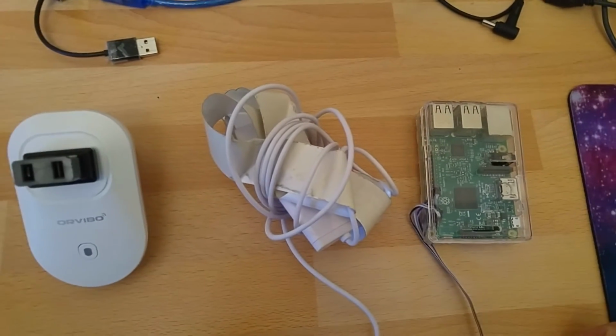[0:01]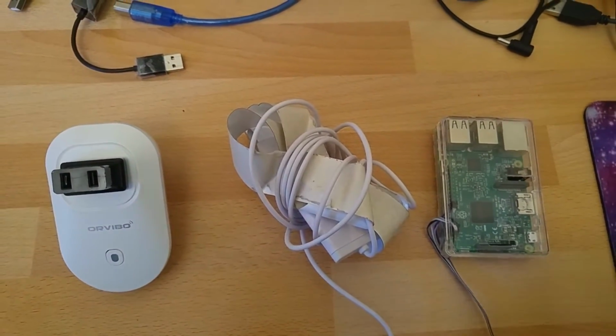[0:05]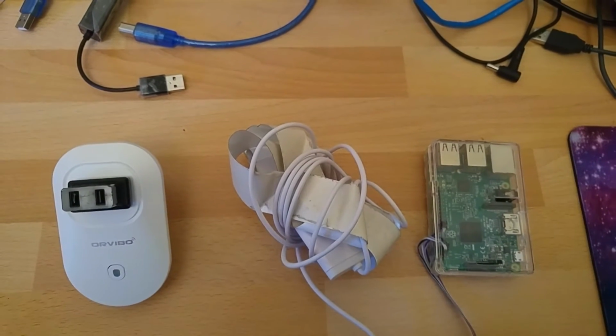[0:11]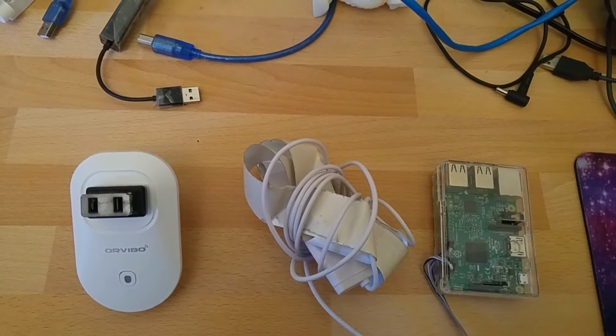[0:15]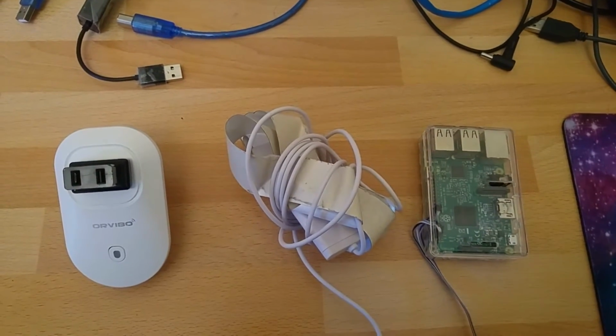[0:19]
So I wanted to show you how I solved the challenge we had at Tikkun Olam Makeathon in San Diego, where we had to track sleep of kids with Angelman syndrome who are sensitive to touch, so you can't just put on them sleep tracking bracelets and get their sleeping patterns. So what we did is we found this device called the Beddit.
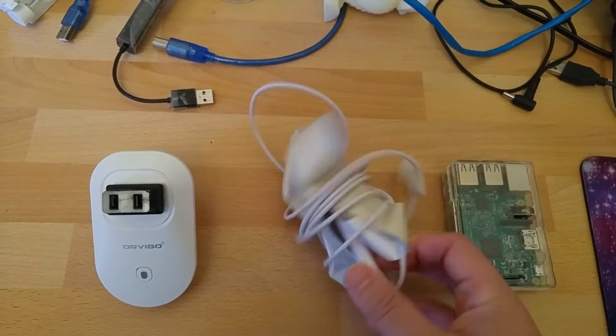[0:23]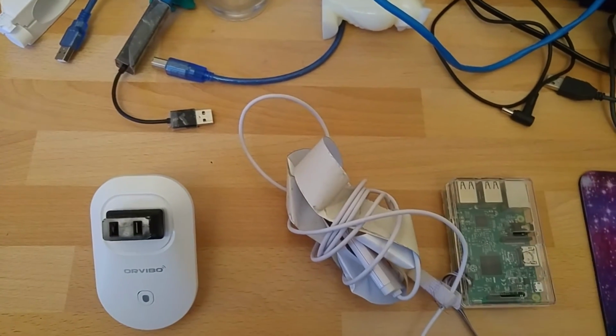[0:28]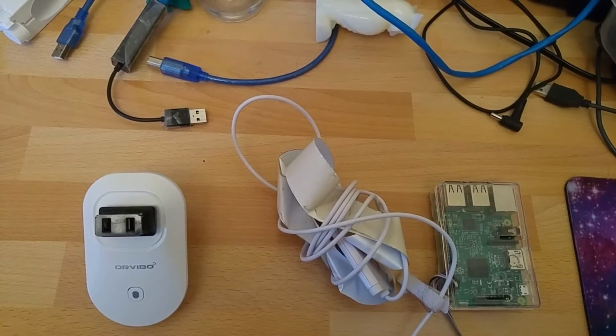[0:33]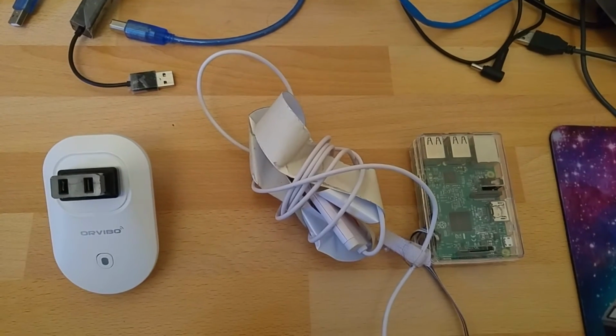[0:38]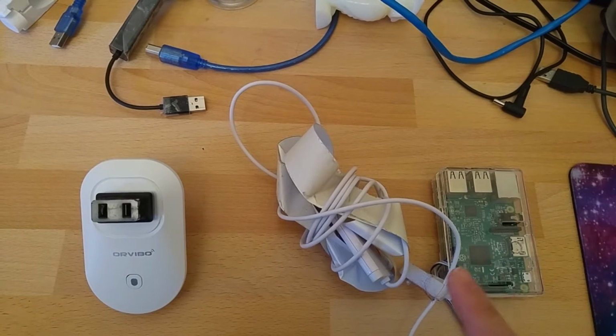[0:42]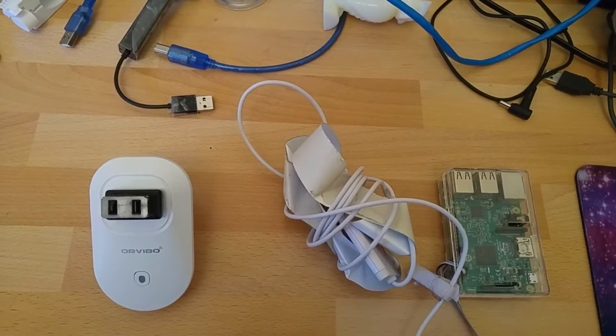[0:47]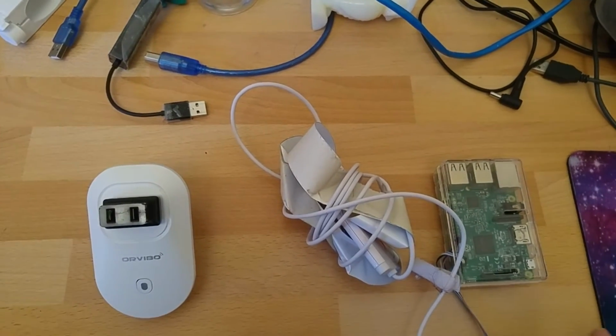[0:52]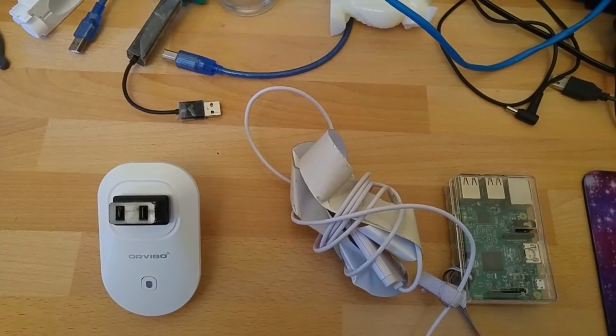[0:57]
This is Beddit 1, which tracks sleep by putting a strip under your bed, and using pressure it can, we've seen, extract heart rate and breath to an extent, and movements. But this has a bug where it stops transmitting after about half an hour, and the only way to fix it is to turn it on and off. It does seem to work with iPhones and some Androids, but we don't want to have a phone sitting next to the bed and resetting it every night.
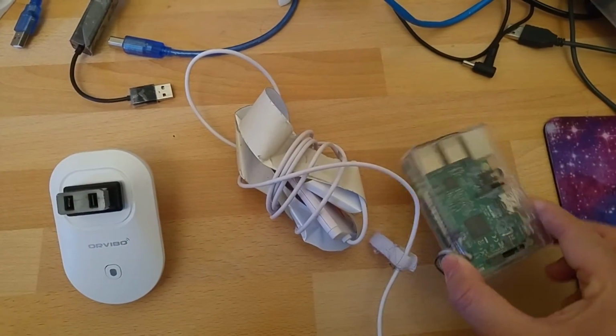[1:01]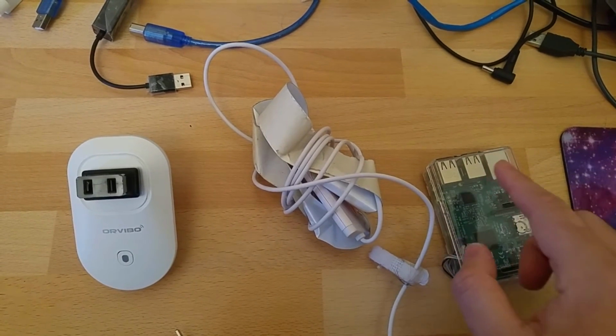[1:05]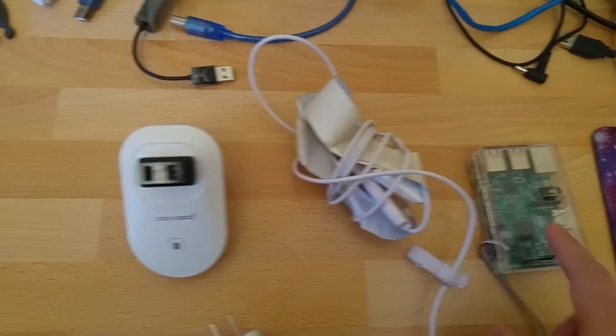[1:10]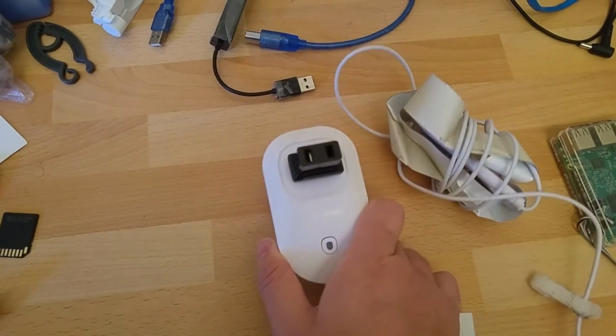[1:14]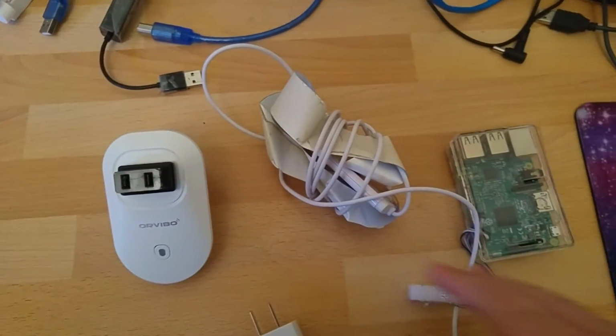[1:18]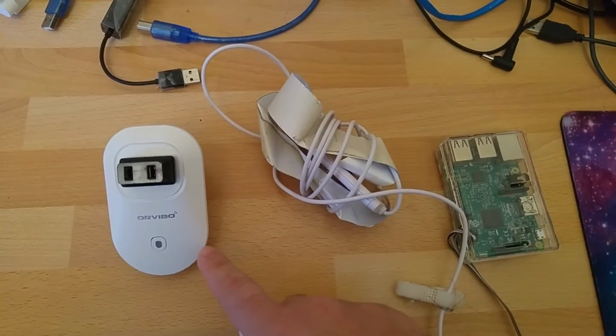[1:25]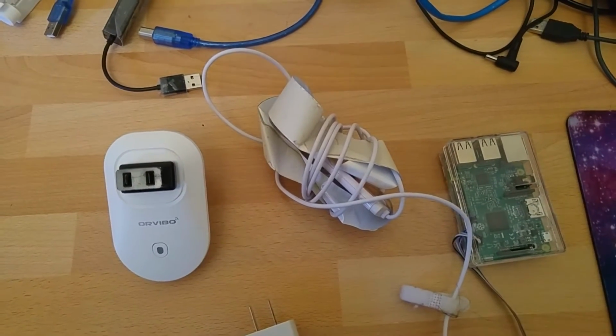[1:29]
So what I've done is this setup. We have a Raspberry Pi 3 here, or a Raspberry Pi 2 with Bluetooth and Wi-Fi dongle will also work. This can control the Beddit over Bluetooth, and it can also control this, a Wi-Fi enabled socket. Got it off AliExpress. It's pretty neat in general. When the Raspberry Pi sees that there's no transmission from the Beddit, it will turn it on and off using this. I'll also show you how this looks when it's all connected up.
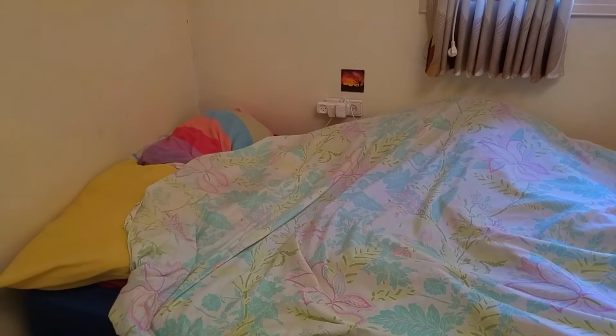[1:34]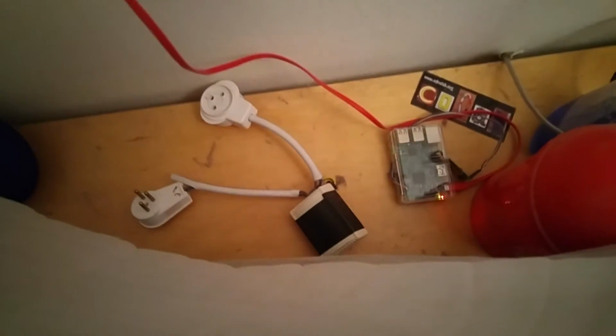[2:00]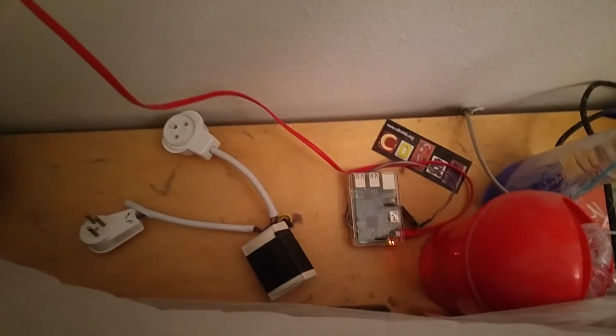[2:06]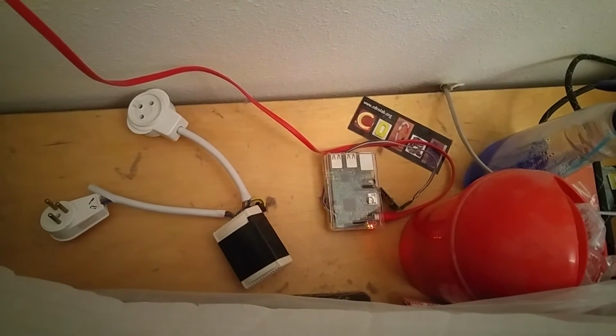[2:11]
So this is the setup to bypass the annoying bug where the Beddit 1 just stops transmitting after about half an hour. I put the Beddit under the bed, and instead of connecting it to the power supply over there, it goes around and connects to a Wi-Fi enabled power socket, so this can be turned on and off via Wi-Fi. The Beddit transmits over Bluetooth, and these are controlled by a Raspberry Pi 3 that sits over here. It has its own power supply, so you can put it in a different room, and when it sees that the Beddit just stops transmitting, it will reboot it using the Wi-Fi power socket.
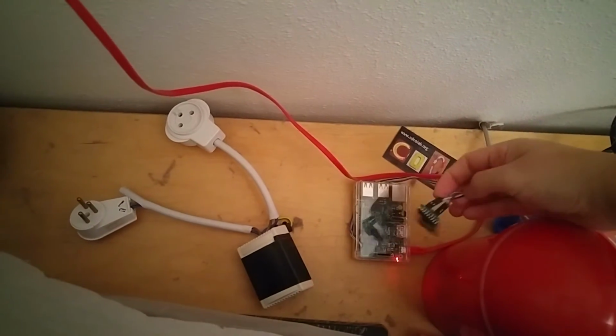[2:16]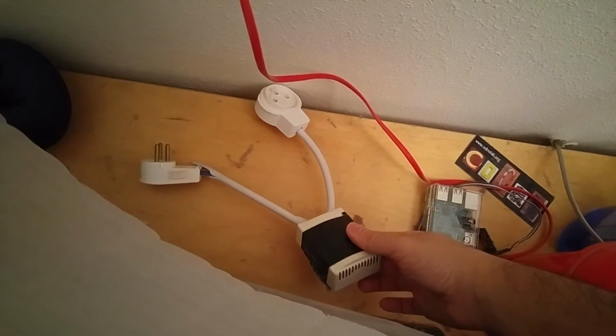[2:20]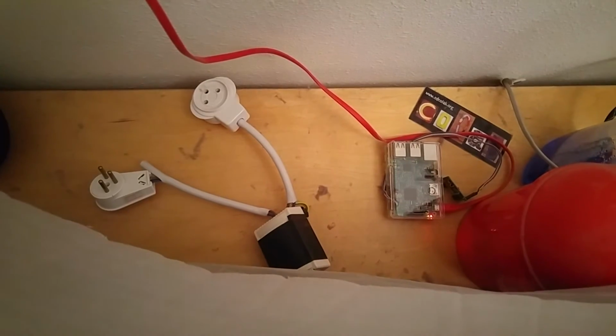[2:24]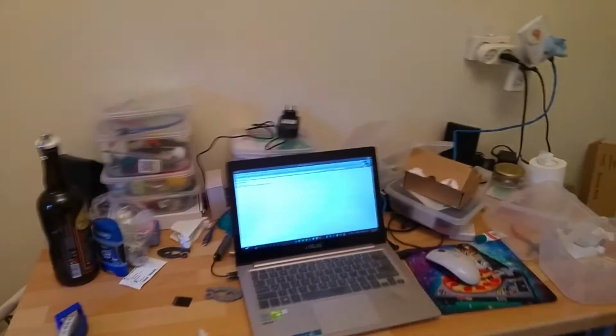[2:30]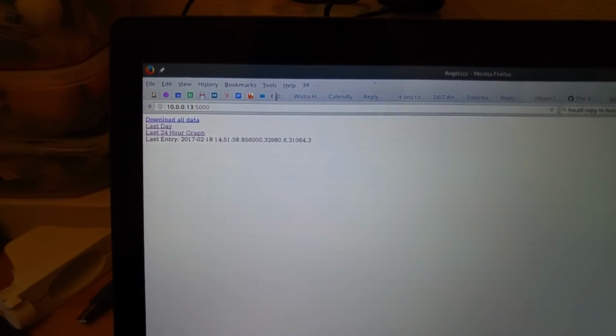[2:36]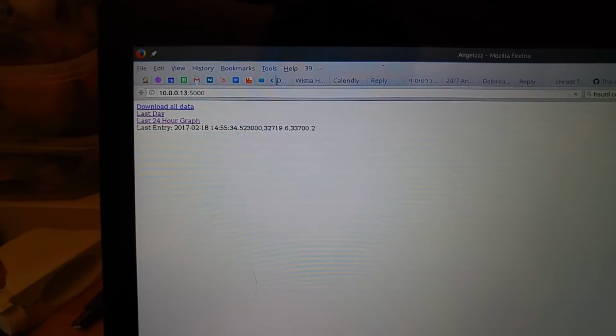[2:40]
There's also another way to do this. You can use an RF transmitter, which turns a relay on and off over RF, so then you don't have to use the Wi-Fi. This is just another way of doing it. The Raspberry Pi can be accessed from a laptop on the network, and if I refresh this, you can see that it's actually logging data live here, and this is all logged into a database.
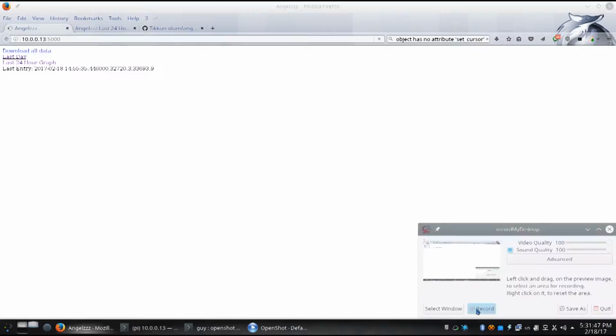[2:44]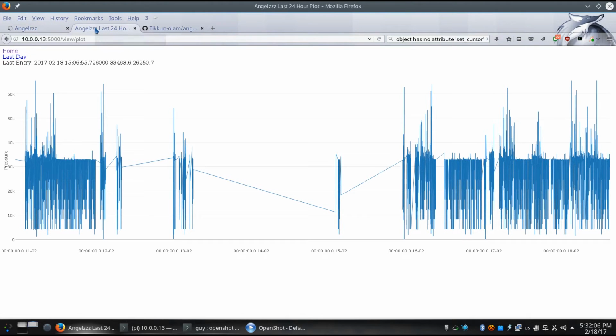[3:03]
We can start analyzing it. I also want to show you what kind of data we can analyze from the Beddit. This is the screen you saw before with the live information. There's also a link here for a 24-hour graph, which I won't click because it takes around 5 minutes to generate. I really need help with the database, guys. This is what you get after you wait. This is 24 hours of the pressure data from the Beddit.
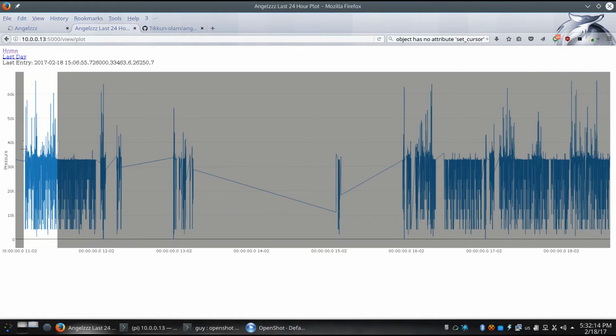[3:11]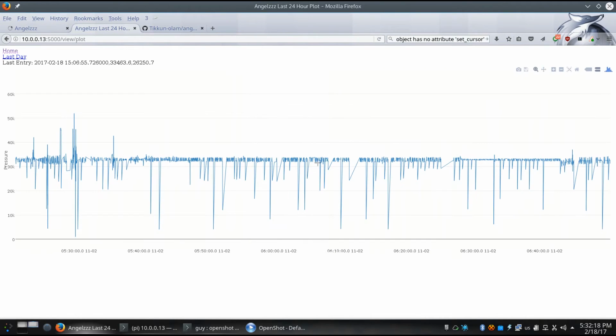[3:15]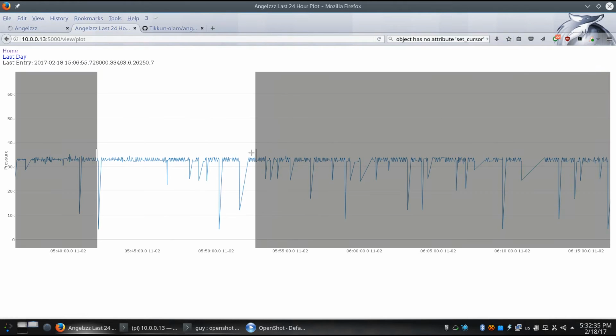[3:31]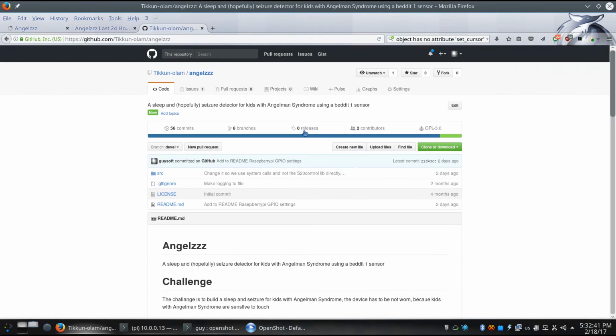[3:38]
Let me zoom here to around early morning. Let's zoom in a bit more. And you can see that we have heartbeat data here. This is stuff we can pull and analyze. All these jumps at the bottom are noise. There's an averaging going on here, so that's why they're at different heights. But this is stuff we can filter out and clean and make sense of. All this is open source and available on GitHub already.
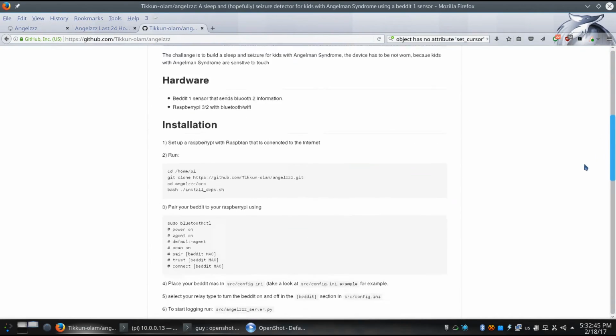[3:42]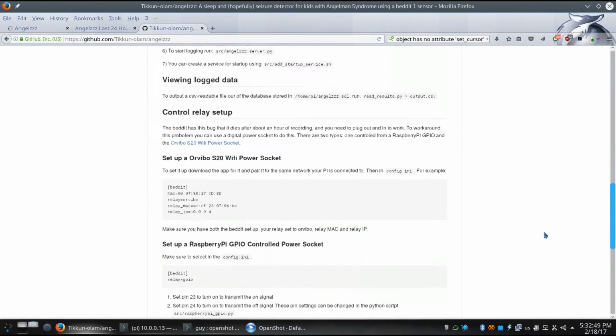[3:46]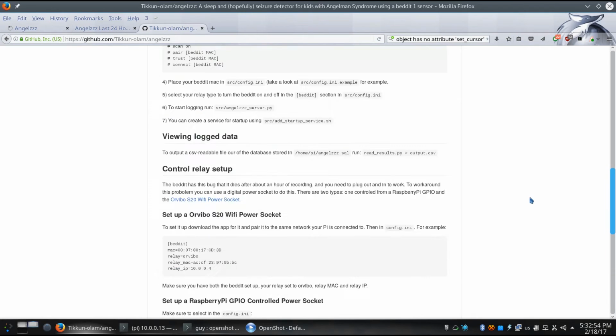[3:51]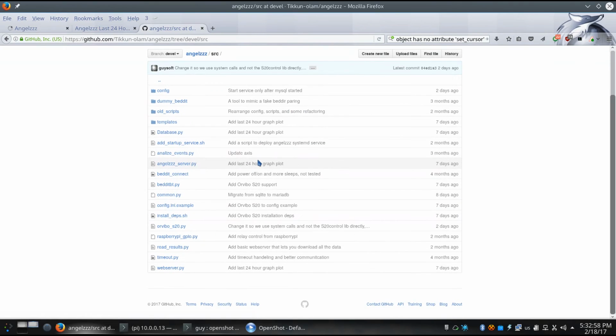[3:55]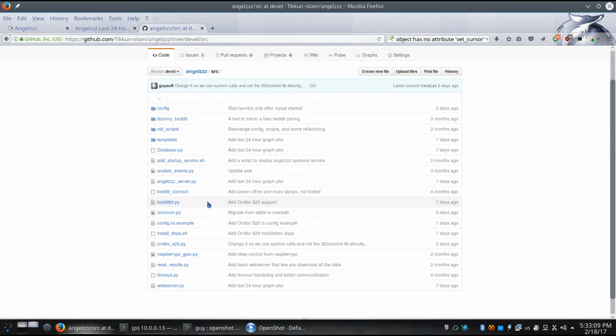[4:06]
I wrote a guide on how to install this, which probably needs work, but I need people to play around with it in order to know what to change. Sources are here. It uses Flask for the web view you've seen, and a bit of JavaScript for the plot. Beddit communication is over Python, and hopefully you won't need to touch that. What we really need is help with accessing the database, which is MySQL. It uses MariaDB because there's sub-second data in there, and you need MariaDB for that. Any kind of help will be great. I've stretched out here with what I can do, and that's about it.